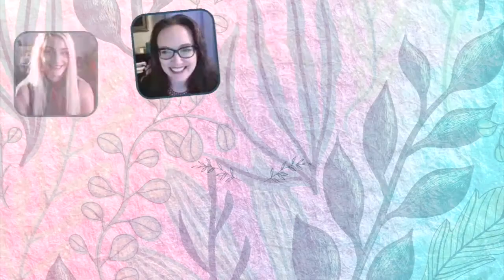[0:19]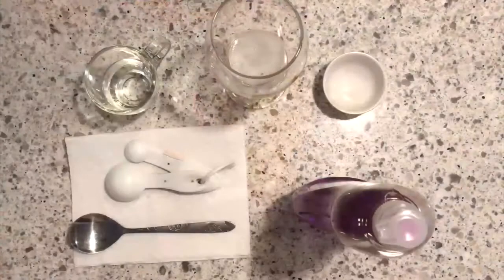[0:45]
Today, I'll be showing you how to extract DNA from your own saliva and then isolating it using a homemade paper centrifuge. You will need a tablespoon of saliva, dish soap, 4 tablespoons of any alcohol, a pinch of salt, measuring spoons, and a stirring spoon.
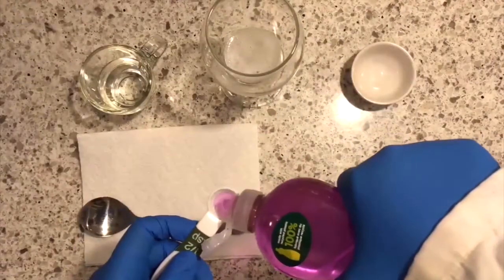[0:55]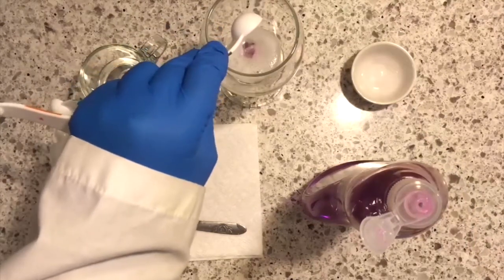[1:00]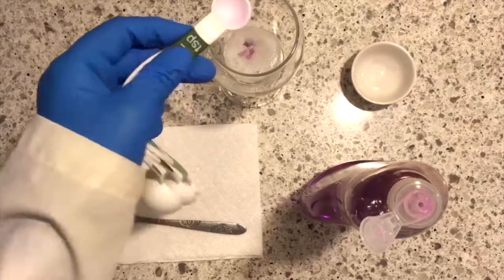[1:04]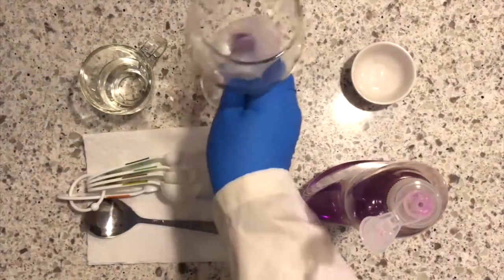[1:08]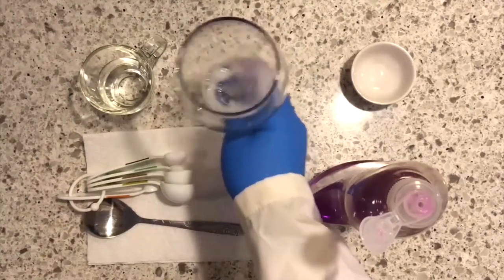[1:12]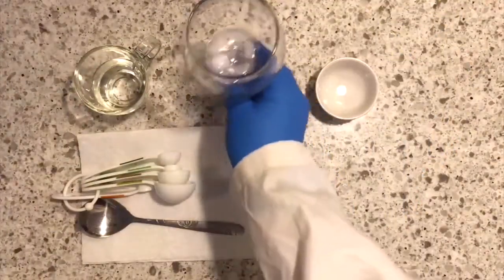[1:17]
To your glass, add 1/2 teaspoon of dish soap. After you added the dish soap, gently mix. The dish soap will break open the cells and the cell nucleus that contains your DNA. Add a pinch of salt and mix gently. The salt will help denature and precipitate the DNA.
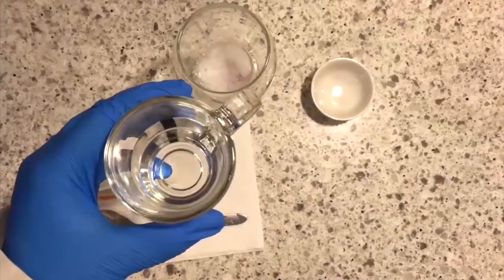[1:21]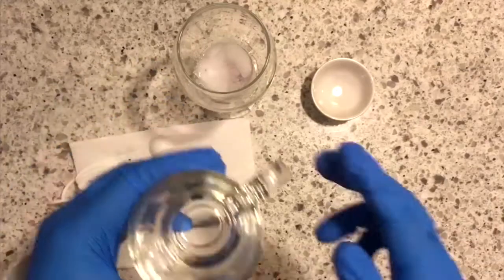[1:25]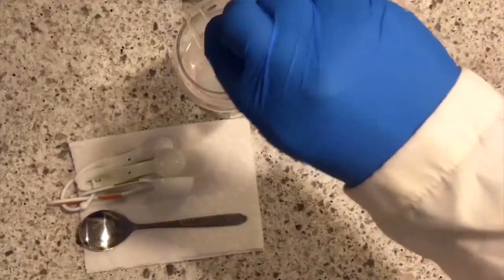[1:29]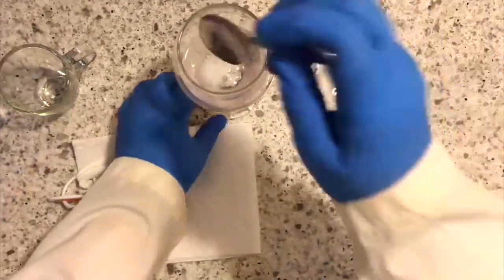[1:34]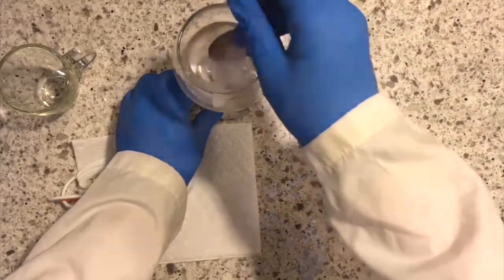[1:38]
Add 4 tablespoons of any strong alcohol. I'm using 90% ethanol, but other alcohols like vodka will work. The alcohol will precipitate the DNA. Mix gently and wait for your DNA to be extracted. The white strands at the surface are your DNA and proteins from your saliva and mouth.
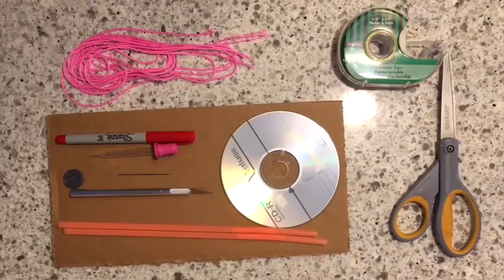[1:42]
To take your experiment one step further, you can also create a paper centrifuge to isolate your DNA. You will need cardboard, a CD, a sharpie, scissors, an X-Acto knife, a button, a pin, 2 pieces of 2-meter string, a dropper, tape, and 2 clear straws.
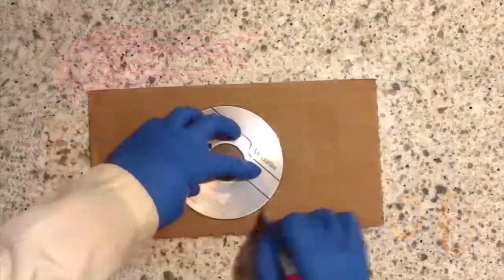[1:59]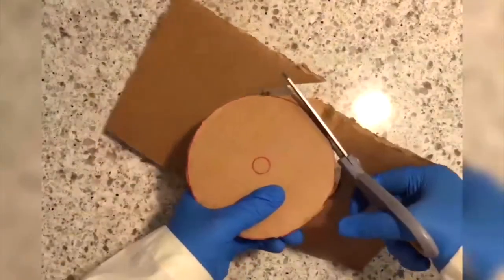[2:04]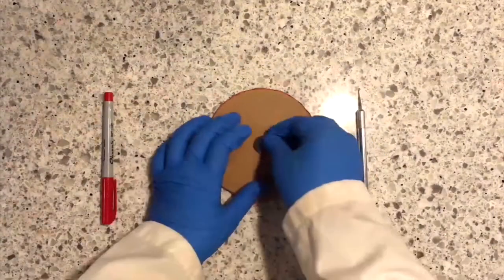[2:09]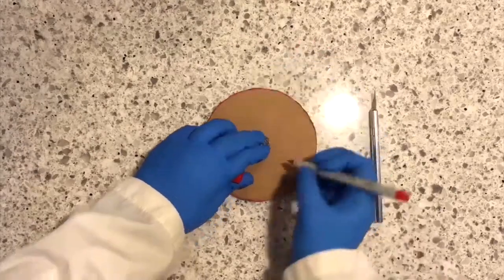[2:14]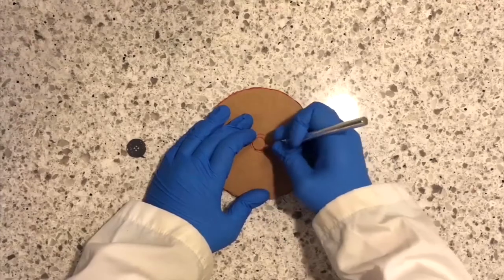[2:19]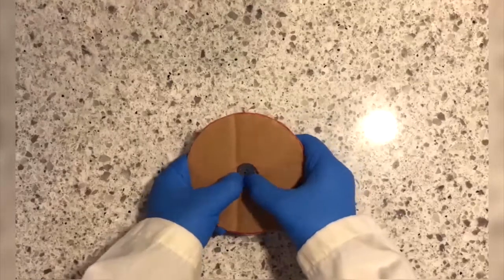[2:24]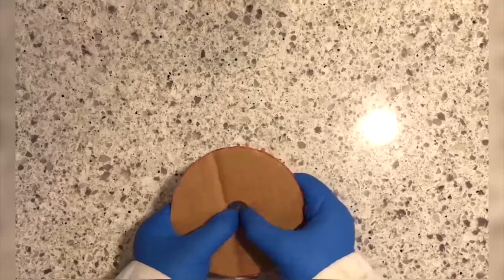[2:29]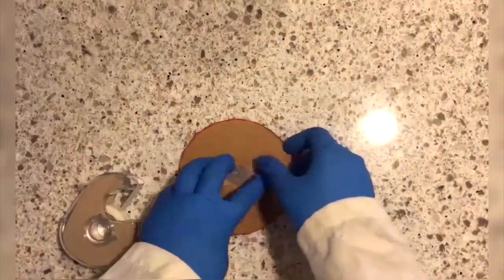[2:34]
First, trace the CD onto your cardboard with a sharpie and cut out the shape. Then trace the button in the center of the cardboard. Using an X-Acto knife, cut out a circle slightly smaller than your button. Push the button through the hole in the center. Tape both sides.
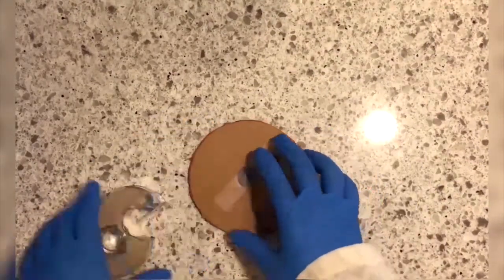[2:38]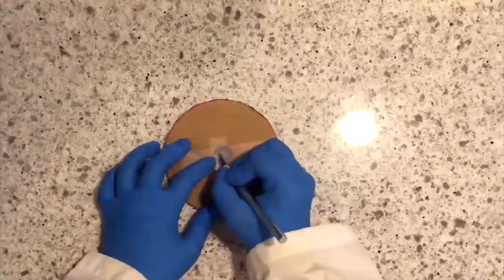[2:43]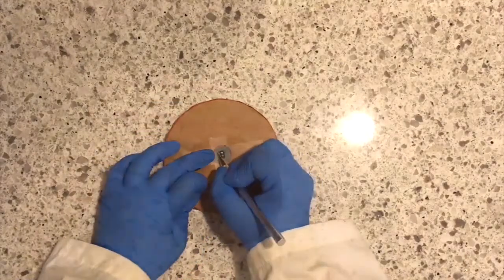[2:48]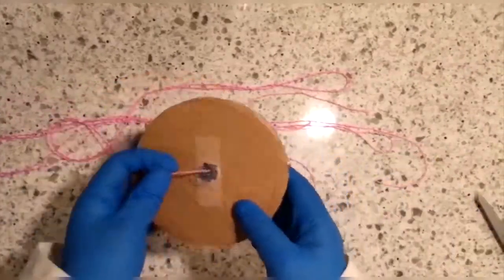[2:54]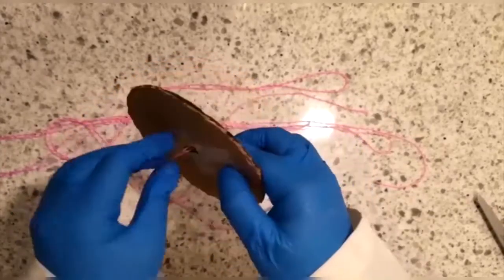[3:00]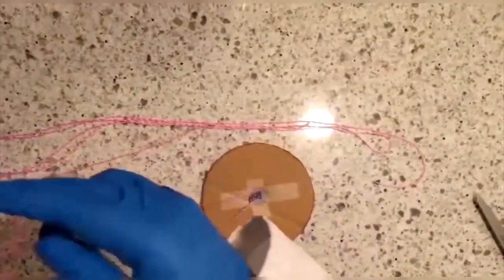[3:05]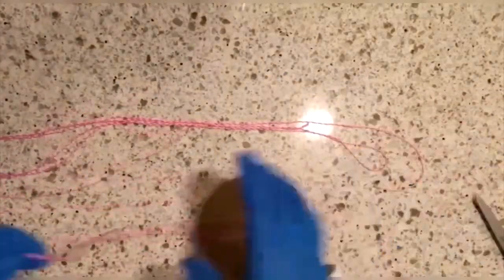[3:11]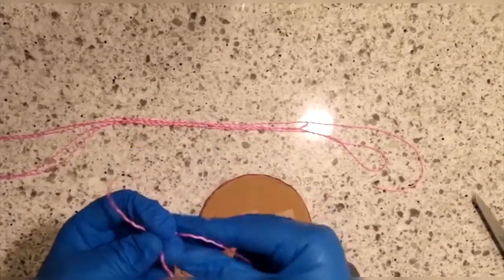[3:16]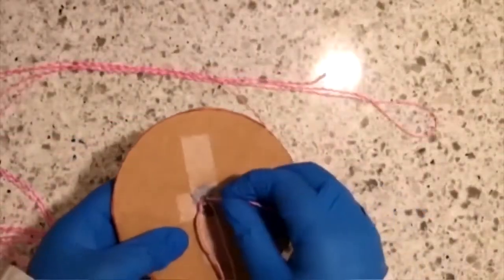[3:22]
Poke holes through the buttonholes using a pin, or cut a small section of tape covering the buttonholes using an X-Acto knife. Once the button is secure, take one string and thread it through one of the holes. Then thread it back through the opposite hole. Once the string is threaded through and even, tie the ends of the string. Do the same thing with your second string.
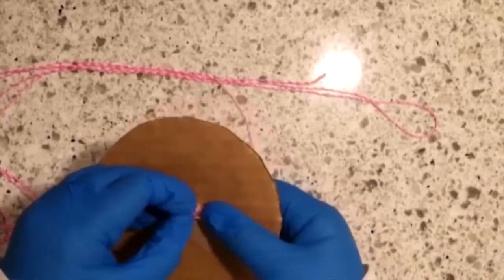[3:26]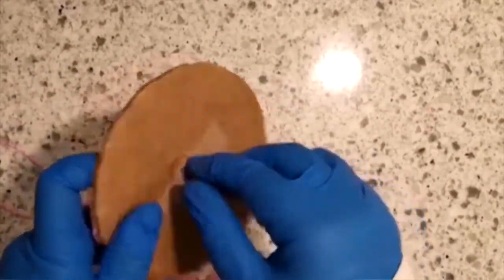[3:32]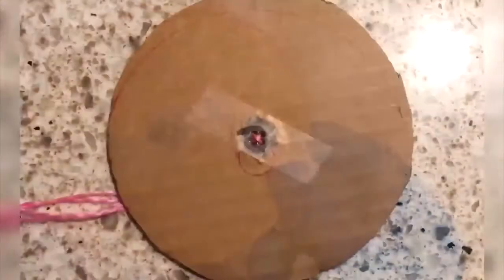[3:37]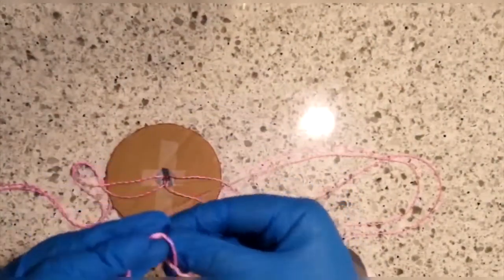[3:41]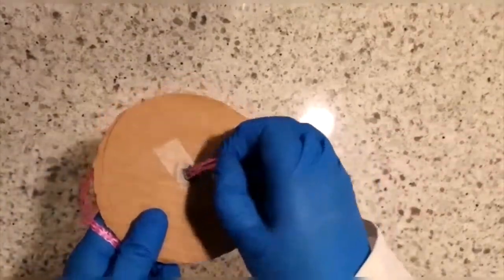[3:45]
Thread one end through one hole on the button, then thread it back through the opposite hole. The two strings should cross on the same side of the button, creating an X. Tie the second string. Pull the string that's crossed until both sides of your cardboard have equal amounts of string.
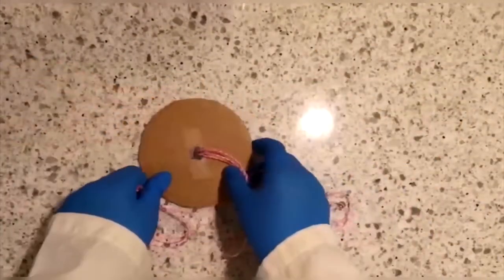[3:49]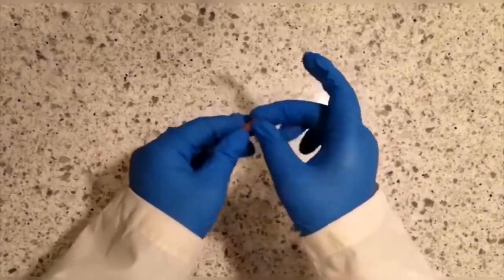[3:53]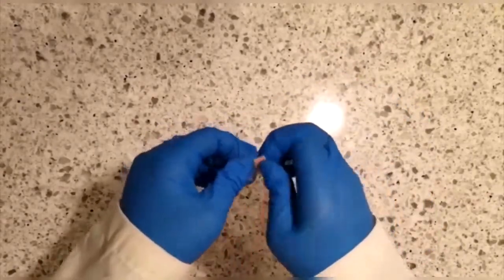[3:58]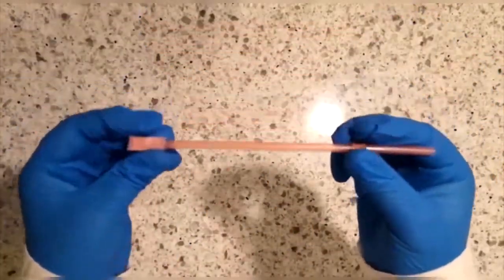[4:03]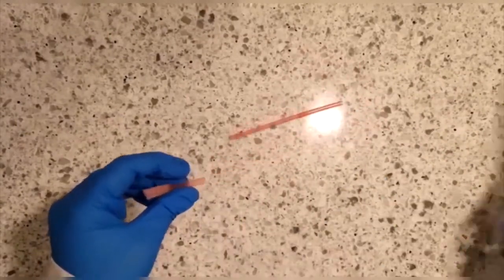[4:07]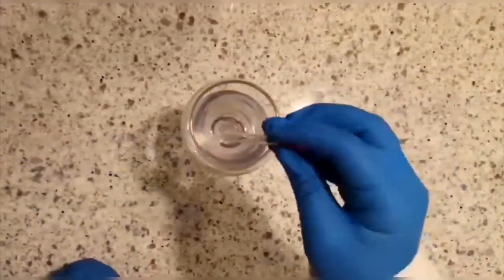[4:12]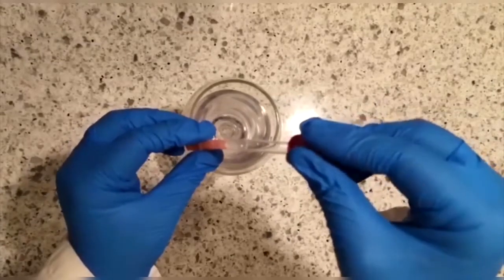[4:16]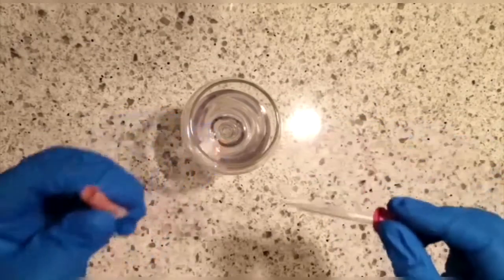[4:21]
Take one straw and bend an inch at the end and securely tape it. This will ensure the liquid will not leak when we pour the solution in the straw. Cut the straw so that it's 2 to 3 inches long. Using a dropper, collect liquid from around your DNA. Then place it in your straw until it's 3/4 full. Leave room at the top to seal your straw.
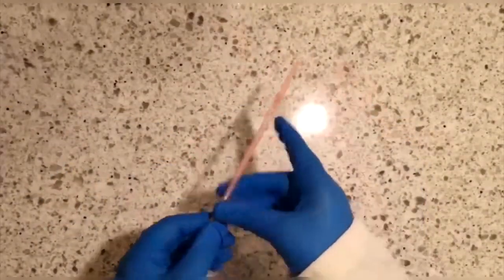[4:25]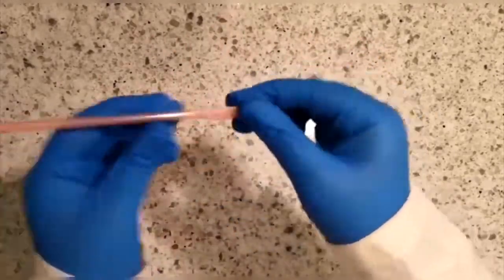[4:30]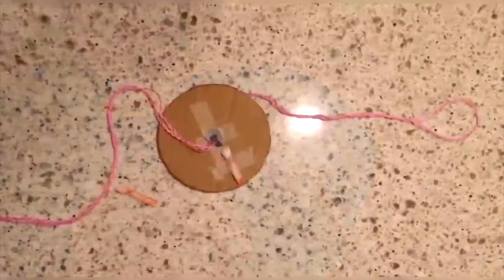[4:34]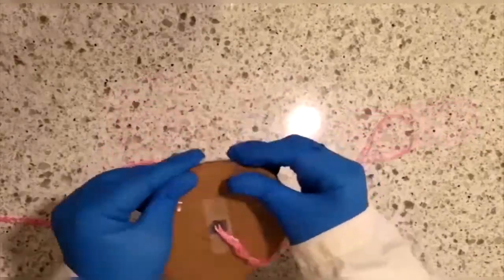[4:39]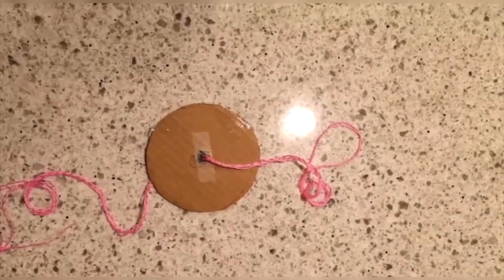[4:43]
Bend and tape the top. Do the same thing with the second straw. This one will be your balance since there won't be much DNA in it. Make sure to label it so you can tell your 2 straws apart. Tape each straw on opposite sides of your cardboard disc to create balance. Make sure to also tape the bottom so the straws do not fall.
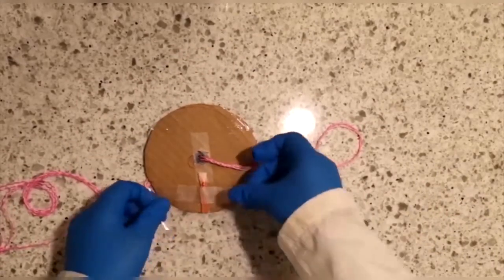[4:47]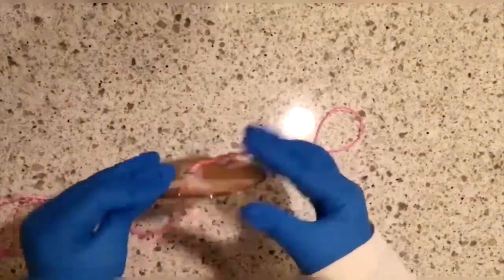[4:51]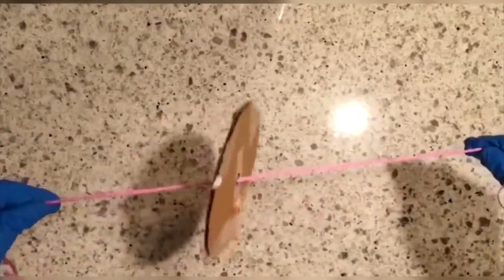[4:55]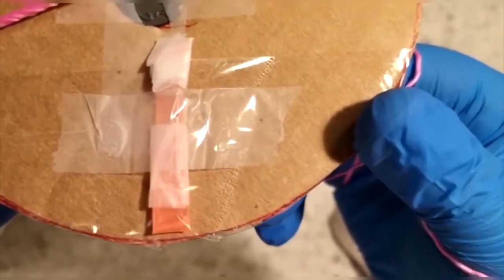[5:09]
Spin your paper centrifuge several times, then pull the strings tight until the cardboard spins rapidly. If your strings are too long, wrap them around your hands before spinning to achieve a faster spin. After spinning for 1 to 2 minutes, you should see buildup at the bottom of the straw. This is your DNA and proteins from your solution.